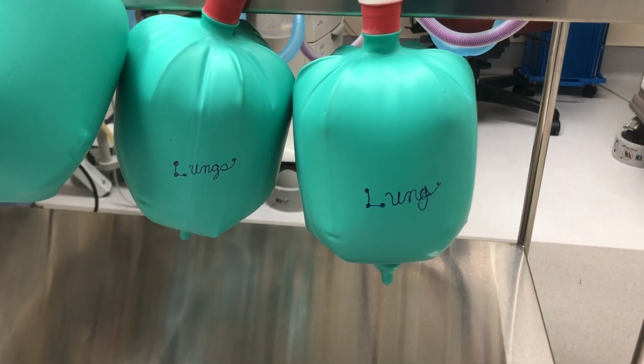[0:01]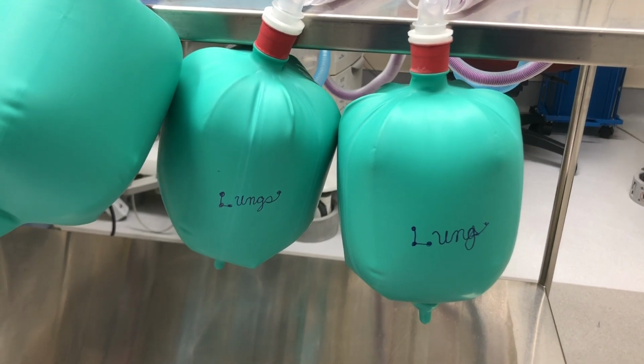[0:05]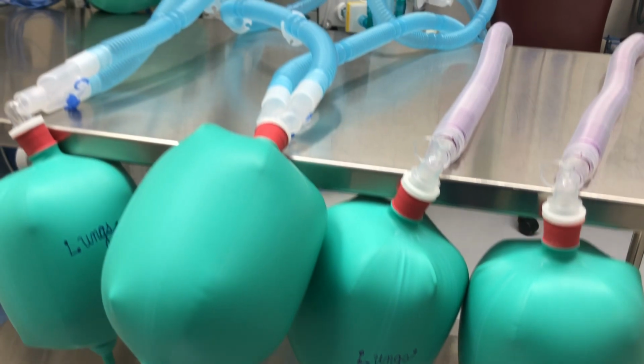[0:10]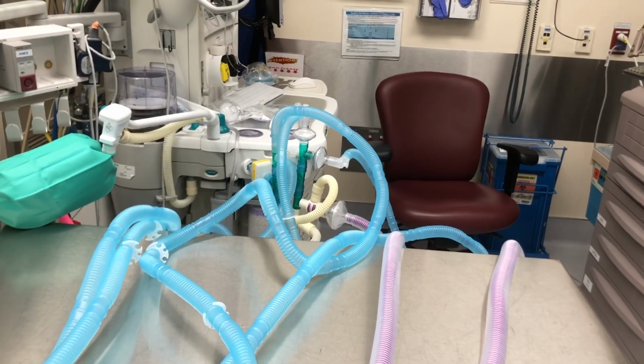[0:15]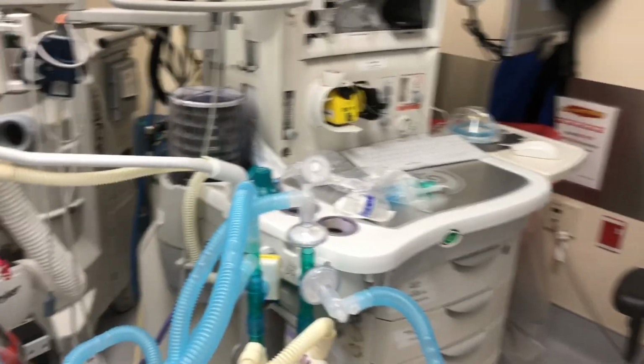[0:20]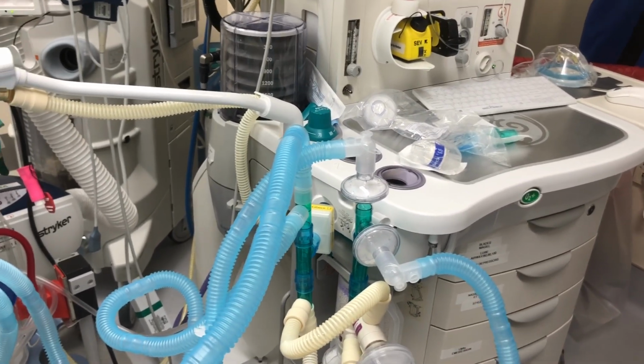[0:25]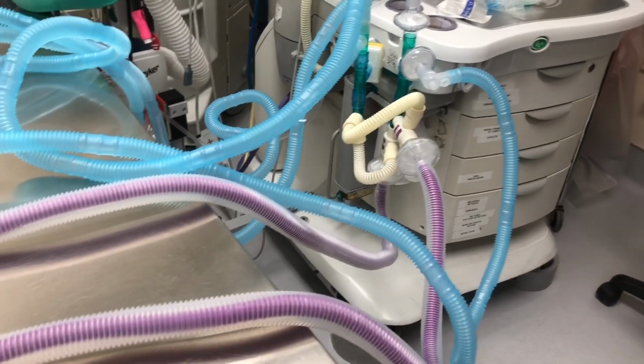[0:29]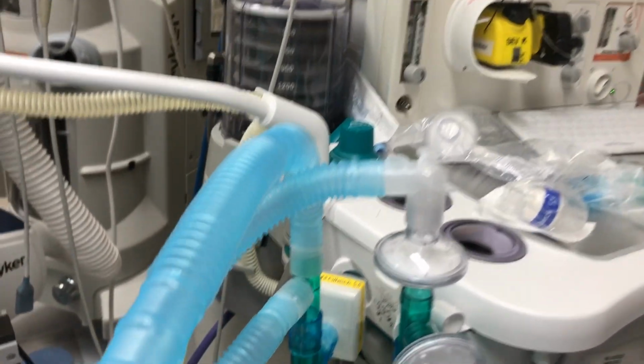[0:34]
I practice anesthesia in Northern California, and with this recent COVID scare, I've been tasked with creating a manifold system to ventilate more than one patient. I've got two different types of circuits on here. One is a standard circuit from our respiratory department, that's the blue circuit, and one is our anesthesia circuit. And I just wanted to demonstrate that they're both functioning. It was really quite easy to build.
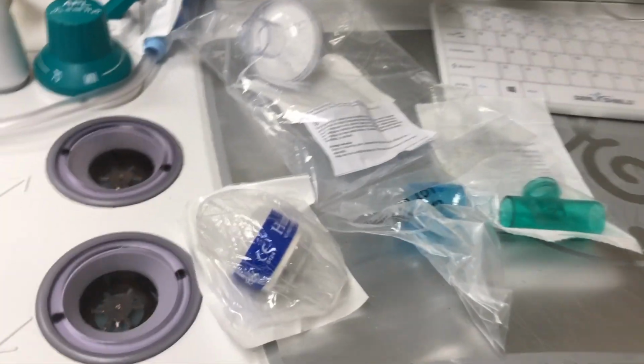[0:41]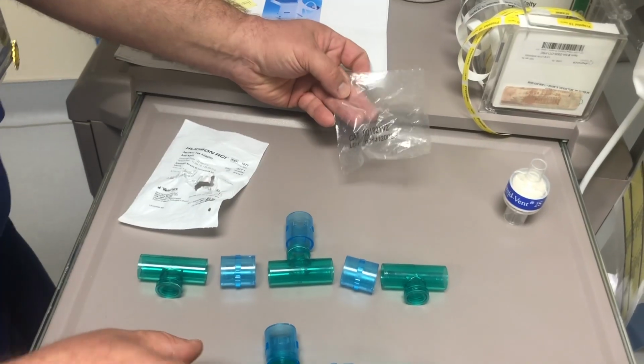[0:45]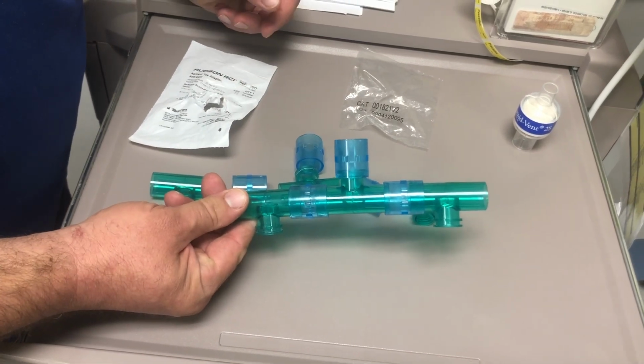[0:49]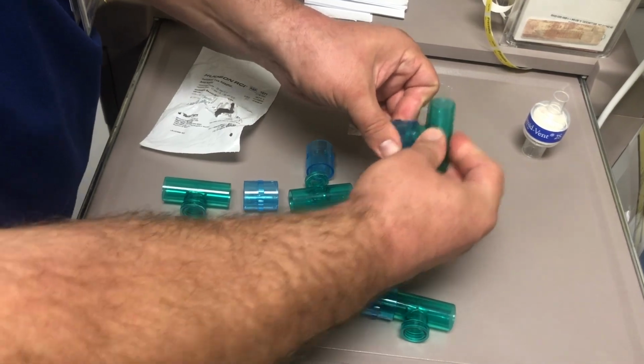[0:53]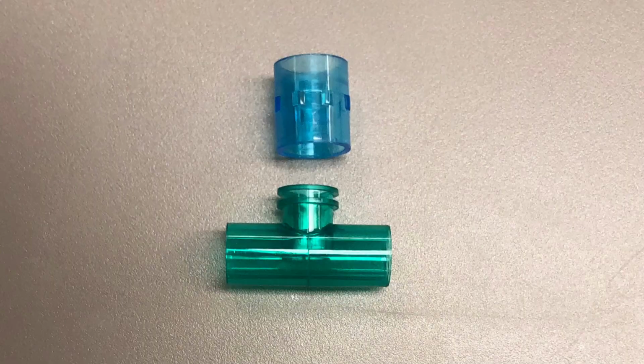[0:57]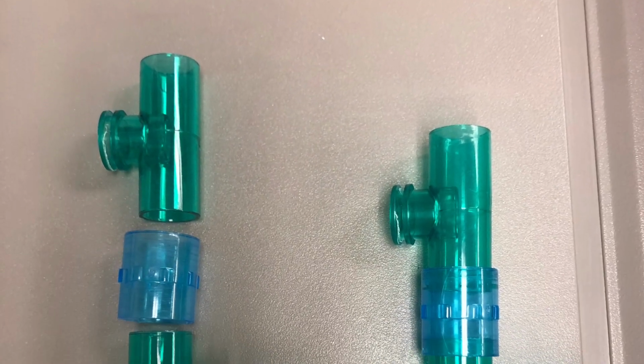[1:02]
I had a series of T-pieces and connectors that I went and got from the respiratory department. There's lots of configurations you can put this in. This is the configuration that I found works best for our vent in our situation. You could also adjust this to make it a T on the top or the bottom or whatever. So you could set it up in this configuration if you were using 2 circuits, or you could set it up like this if you were using 3 circuits.
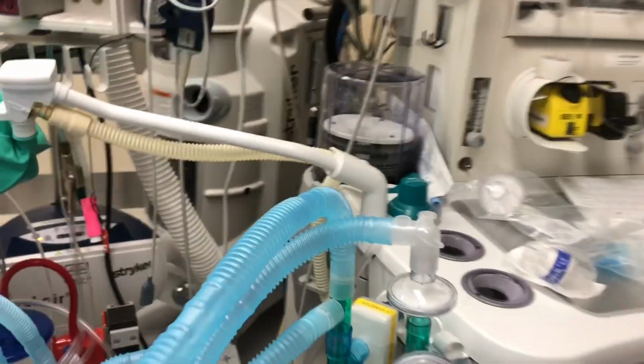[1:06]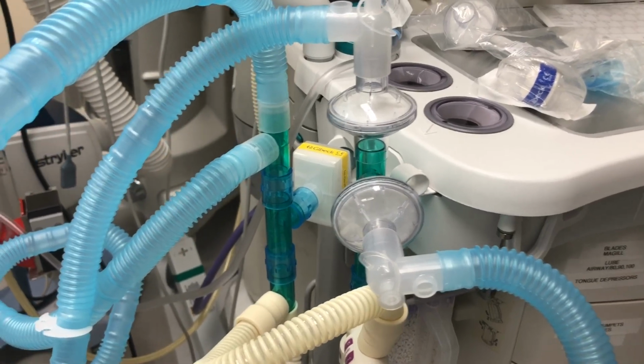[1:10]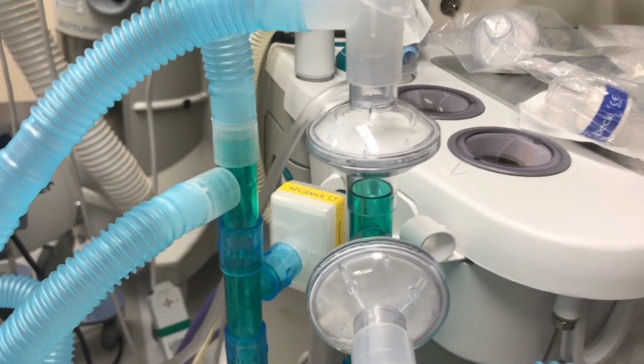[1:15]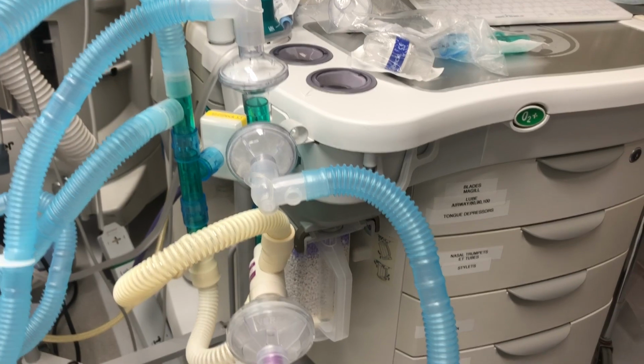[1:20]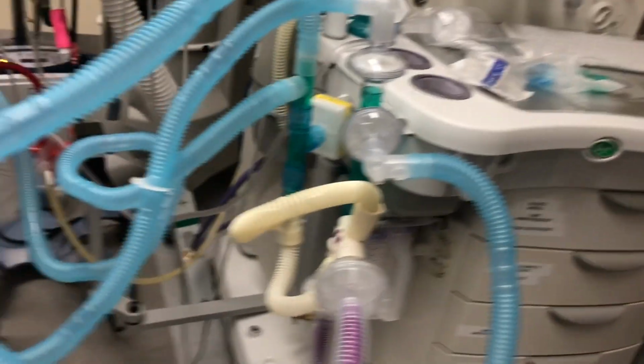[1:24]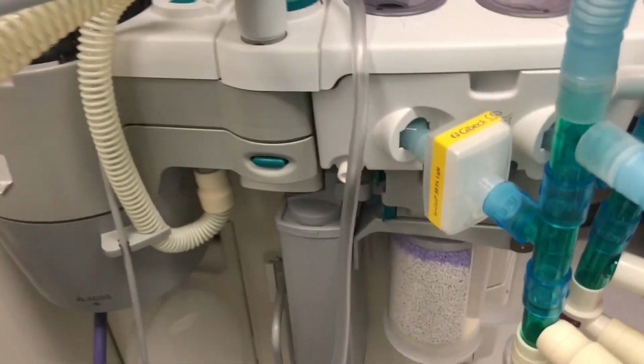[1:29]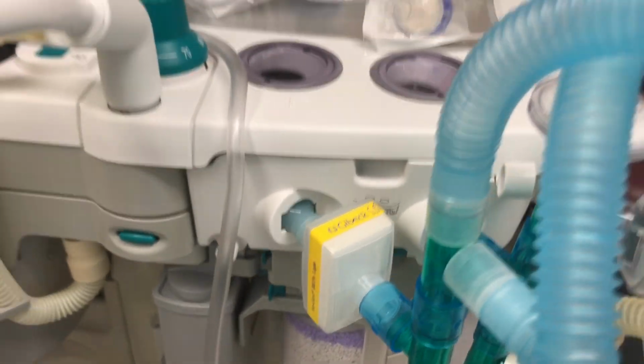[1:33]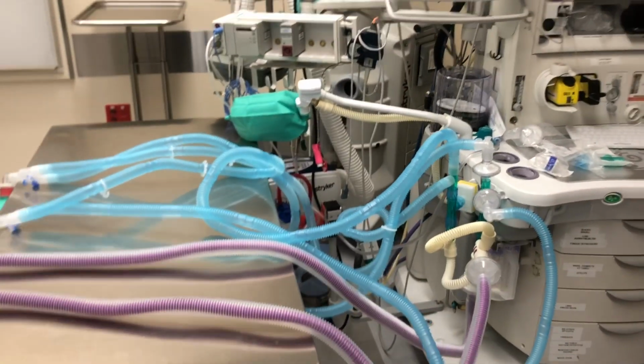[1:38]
Similar to a respiratory therapy vent, we have our viral bacterial filter on the proximal end of our circuits, not only to protect the patients, but providers as well, and any backflow of air that may occur in this system. On the distal end of the system, I have a HEPA filter, which goes into the machine, hopefully keeping the machine clean.
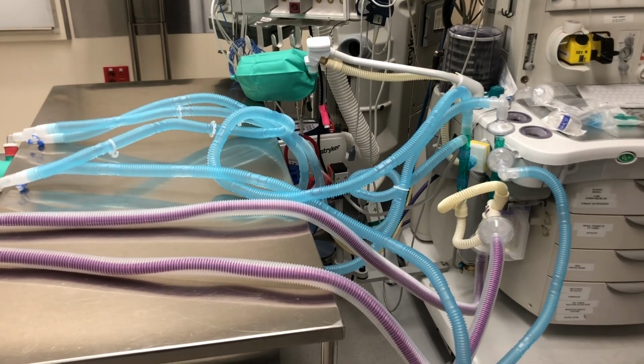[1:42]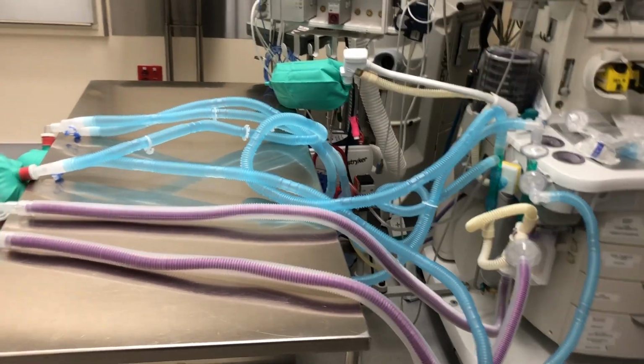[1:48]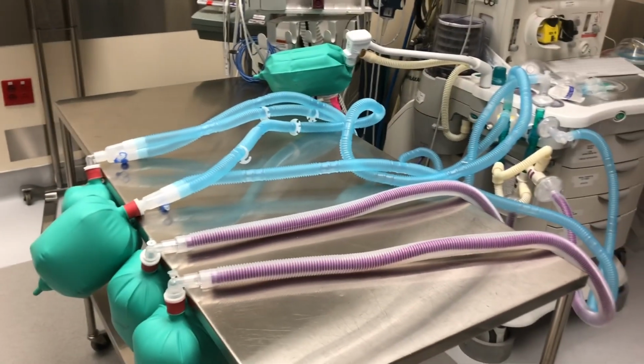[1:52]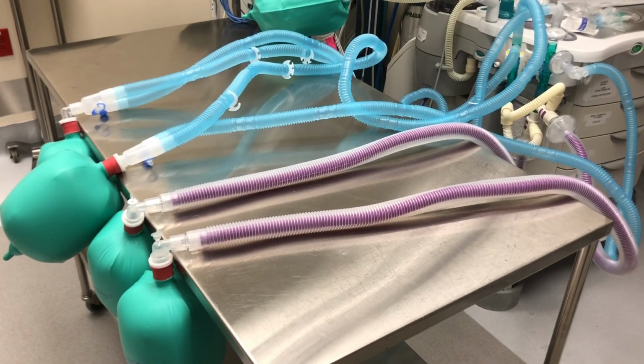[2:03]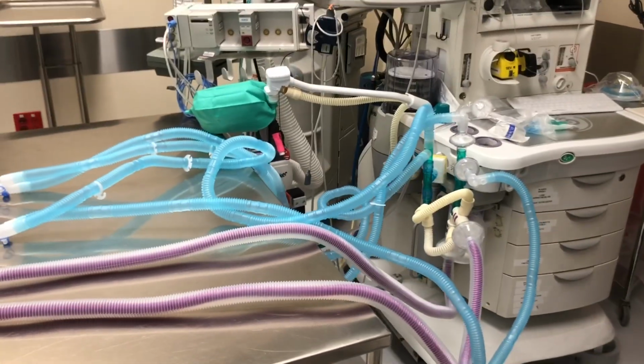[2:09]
Like I said, there's quite a number of flaws with this system. You first have to have patients that are about the same size, lung volume, airway resistance, and other similar factors. We do expect these patients to come in and go into ARDS, so this is not going to be for our end-term ARDS patients, but more of our interim, because obviously we won't be able to differentiate our pressures or our volumes, and we don't want one patient with stiff lungs shunting air to another patient.
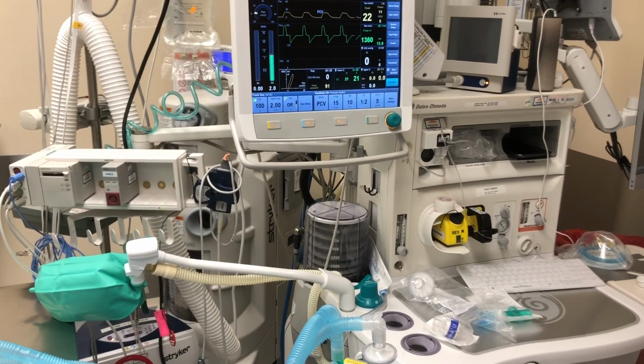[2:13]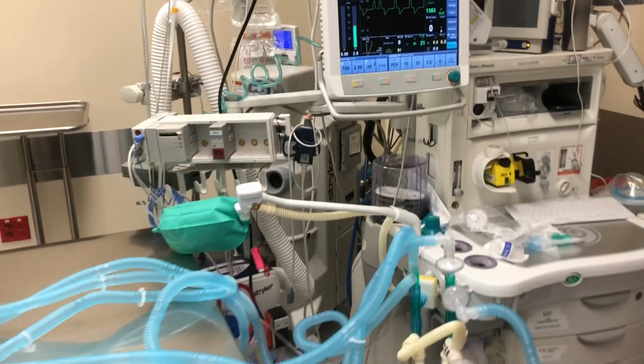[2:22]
Vent pressure: these vents are often run on our 50 psi oxygen pressure from the wall. So if you're running a lot of these vents and a lot of ventilators throughout the building, throughout the hospital, you could reach a capacity issue.
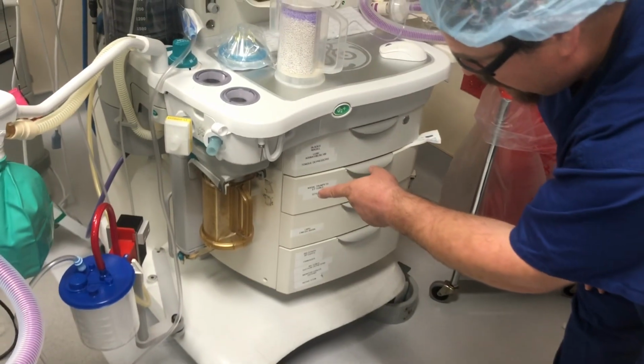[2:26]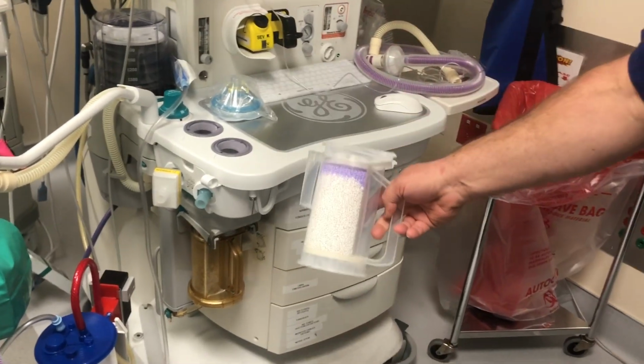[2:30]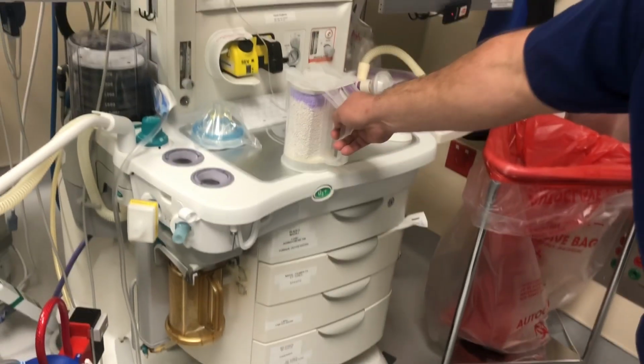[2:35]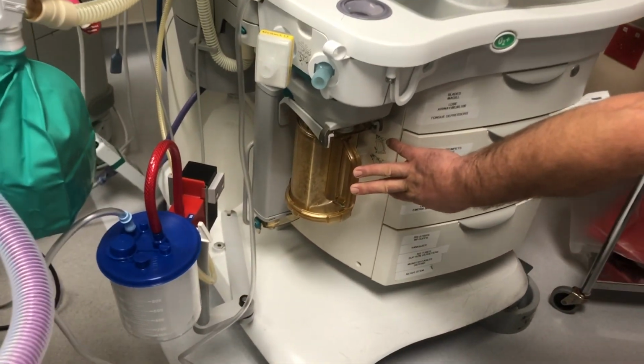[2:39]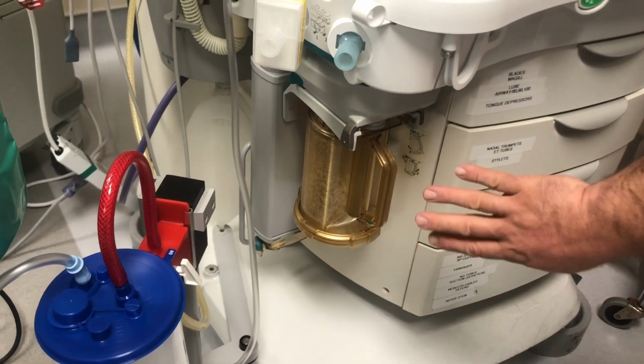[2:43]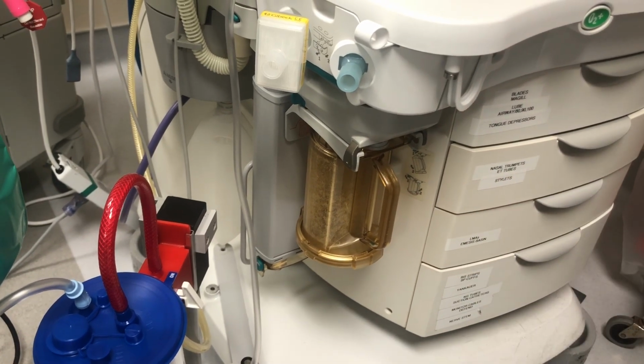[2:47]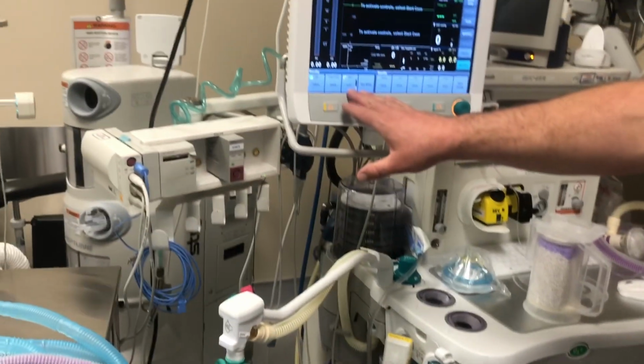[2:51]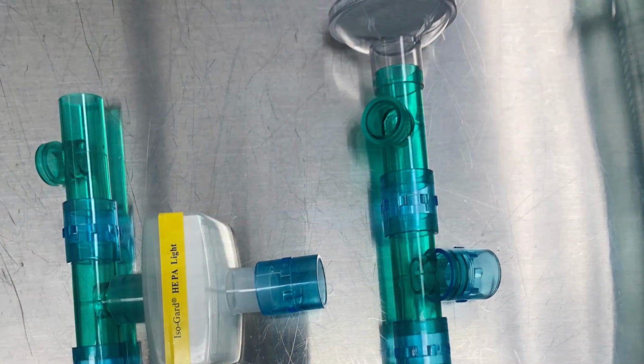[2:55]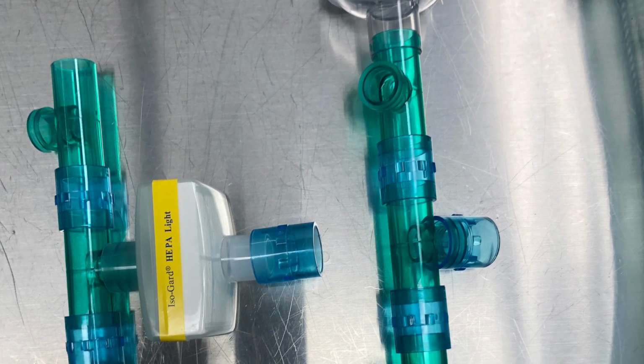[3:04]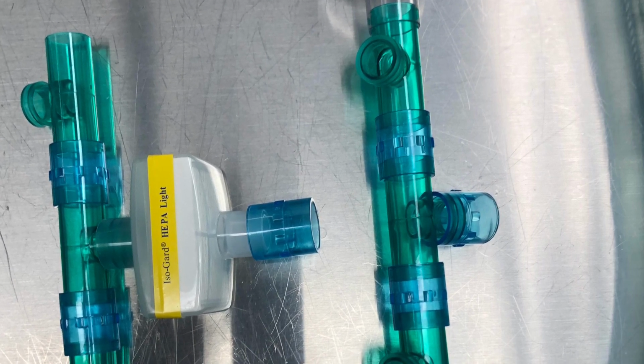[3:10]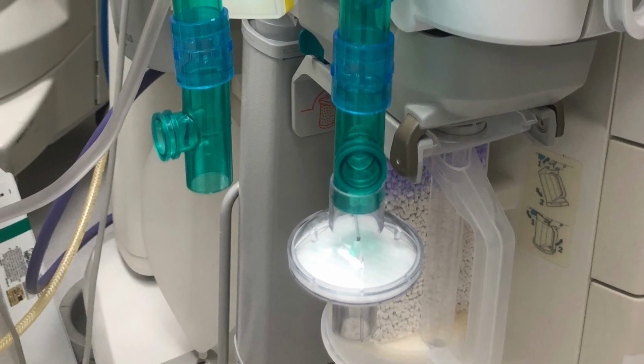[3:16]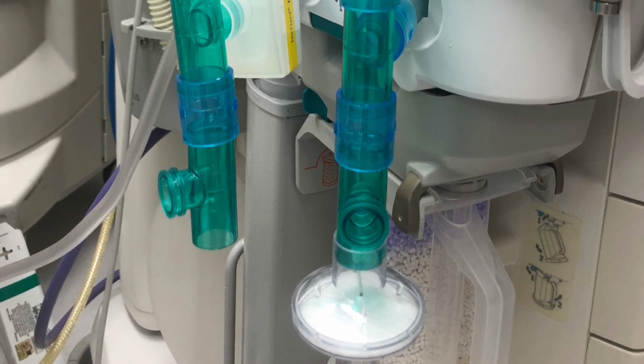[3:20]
There's a variety of configurations that you can set this up at depending on how many patients you're ventilating, what your equipment is, and where you want your filters, your HEPA filters and other filters. There is an issue with spontaneous breathing patients and where they may be breathing dysynchronously. The use of paralytics may come into play here. I would recommend individually ventilating patients and pulling various recruitment maneuvers and evaluating each patient's lung status individually while you're using this system.
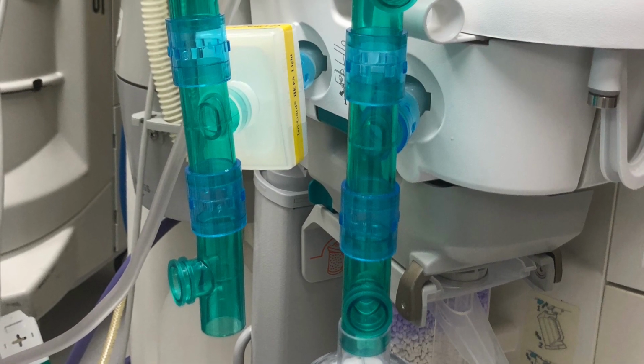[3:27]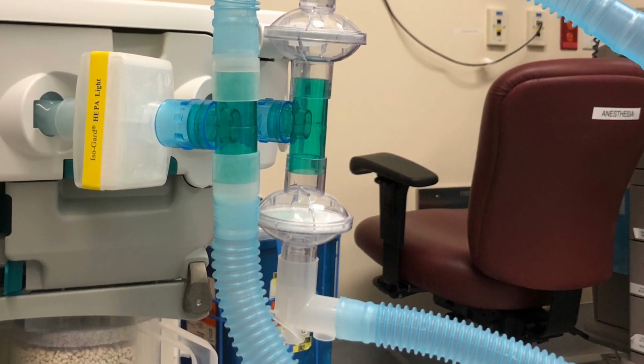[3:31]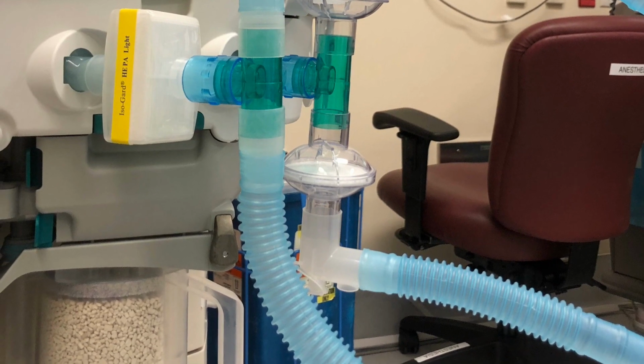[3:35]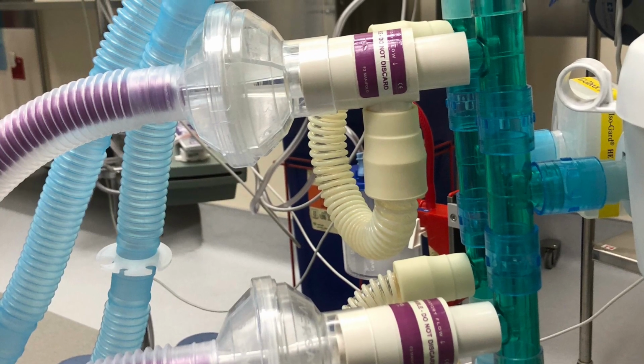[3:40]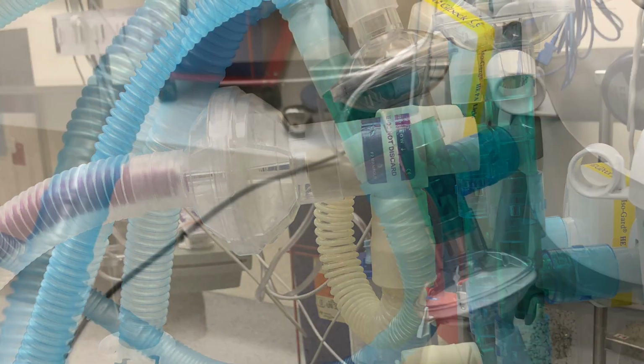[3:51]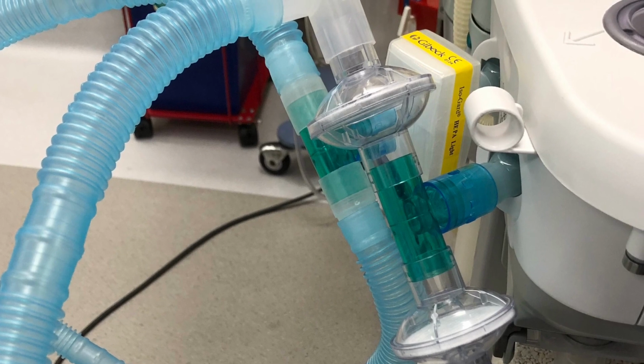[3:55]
There was a paper published in 2006 by Dr. Neiman and Dr. Babcock of Detroit listing some of the limitations and workings of this system that we're trying to put together here. And of course, Dr. Babcock has a great video on YouTube that you all should watch as well. There was also a study done in 2008 where Dr. Palladino attempted to ventilate 4 sheep for 12 hours on this system. He did so successfully, but did reveal some real oxygenation and ventilation issues while doing so.
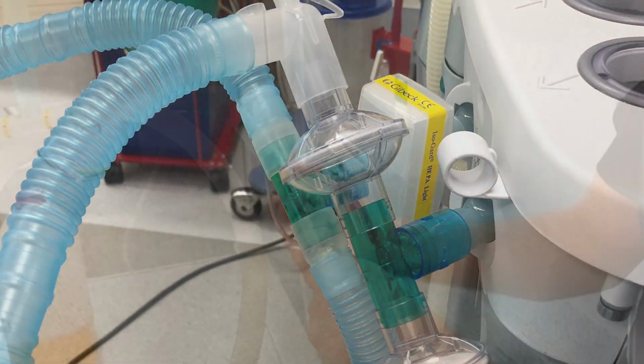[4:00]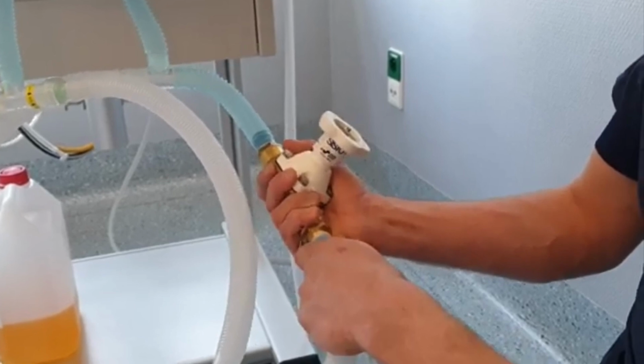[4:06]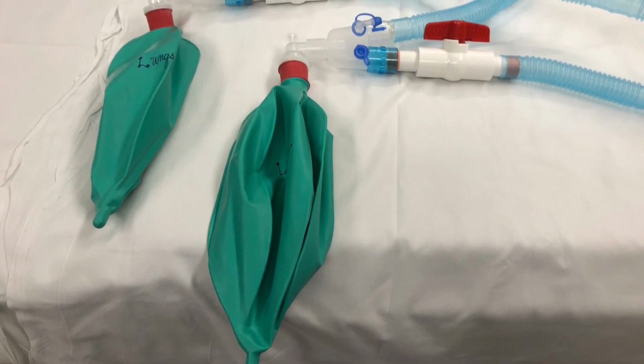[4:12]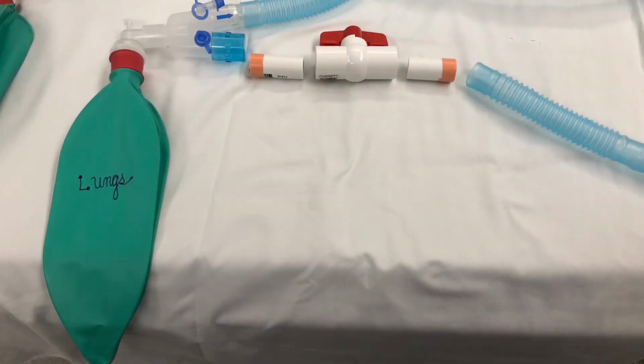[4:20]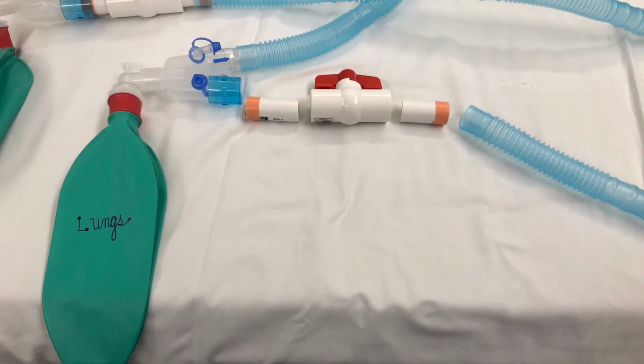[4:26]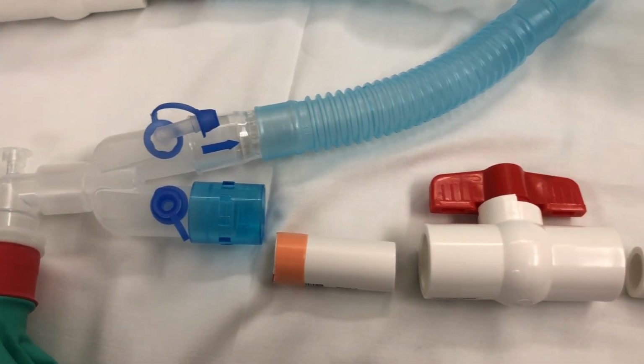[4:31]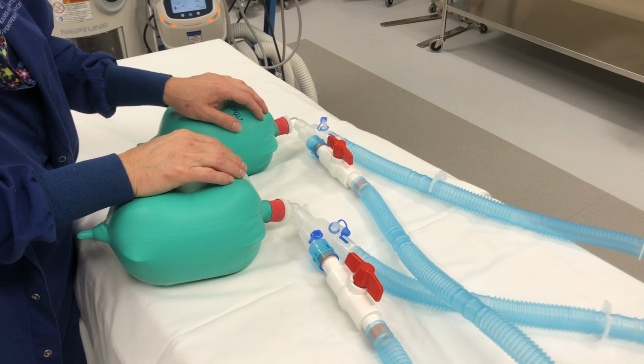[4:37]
In response to the coronavirus, various people are trying to come up with fixes for these downfalls in this system. Dr. Mergue of Belgium came up with a simple system of using basically stopcocks purchased at your local hardware store to put in line. So I've tried to mimic that here with some success. So I went down to my local hardware store and got some PVC piping designed for water, and I fit it together and used a little tape so that it fits snugly into my system. What I've been able to do by doing this is effectively decrease flow to what I would consider a good set of lungs and shunt that flow away to a more damaged set of lungs.
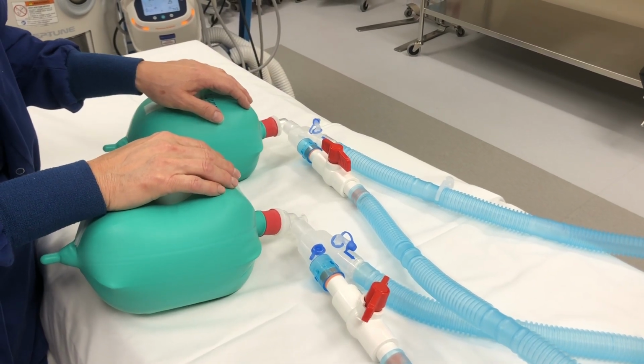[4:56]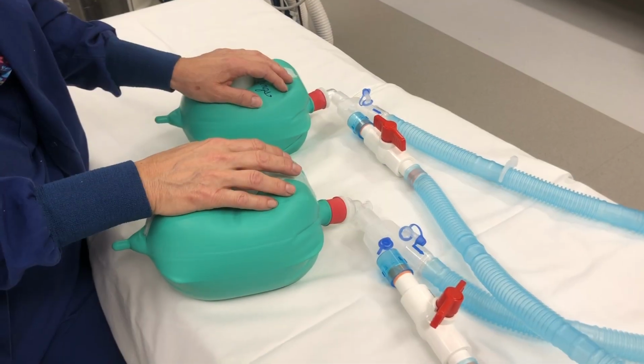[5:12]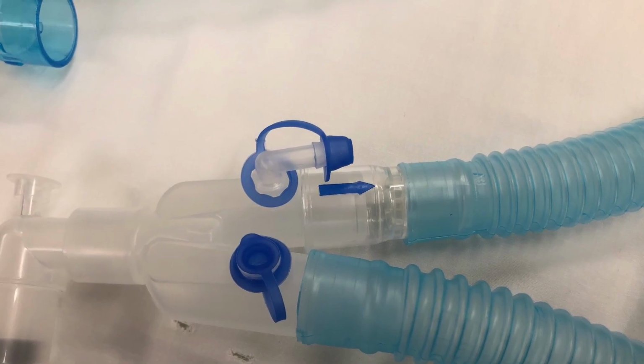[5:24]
So as you can see, I've installed this homemade stopcock system into the inspiratory portion of our vent. As you can see on the other side, there is a one-way valve. This is very important for this system to function. As I partially close off this stopcock, you can see that the lungs are inflating at different rates. So decreasing this flow also changes the IE ratio on this, what we would call a good lung. The PEEP and peak pressures should be the same depending on what your set IE ratio is and your respiratory rate. Here I just wanted to show that there was a one-way valve installed in the circuit.
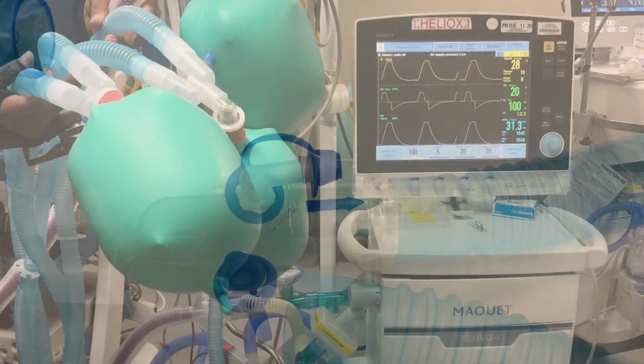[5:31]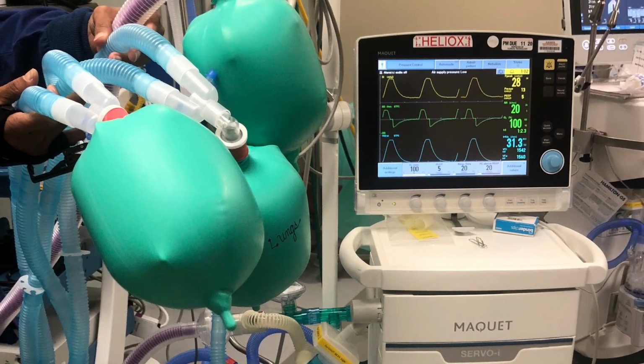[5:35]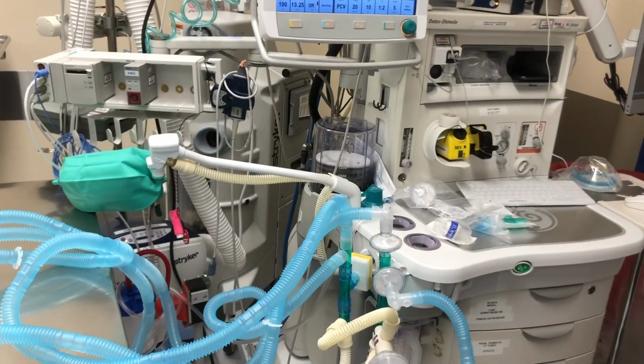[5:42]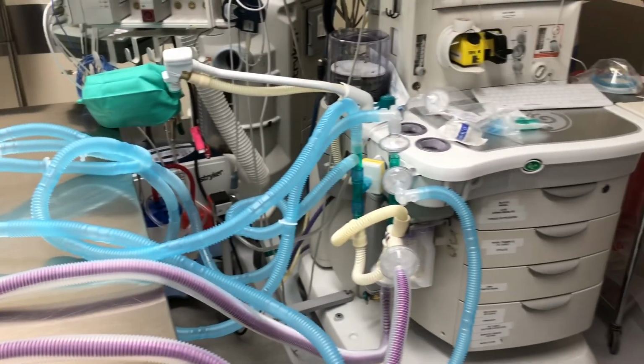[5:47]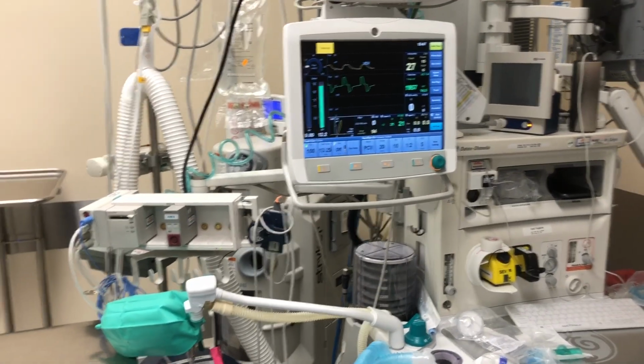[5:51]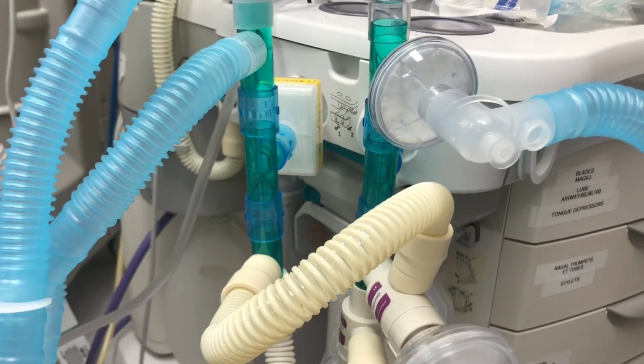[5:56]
I was also successfully able to apply this multi-circuit system to the Maquet Servo that we use in our Women and Children department. However, it did not work on the Hamilton G5 due to the inline sensor. This obviously is not an ideal solution and not for long-term ventilation. I hope none of you have to use this. But if you need to, here it is. Godspeed.